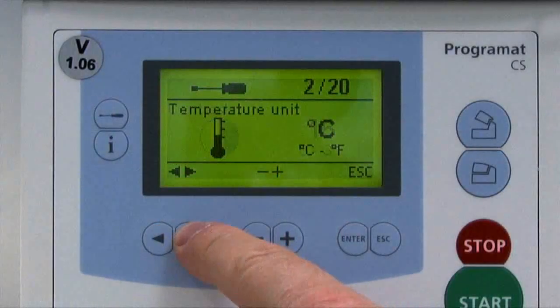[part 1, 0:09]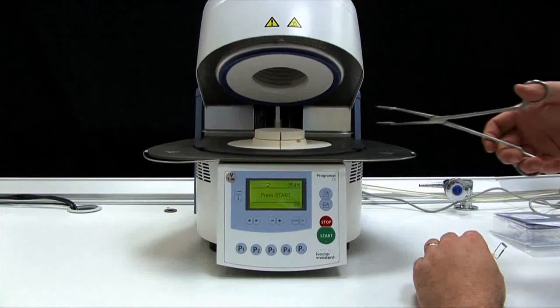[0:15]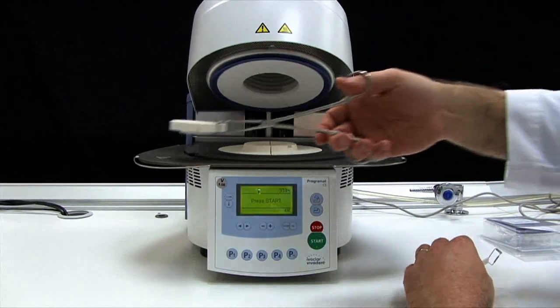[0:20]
To calibrate the Programat CS, begin by selecting the calibration program. Remove the firing plate from the furnace using the furnace tongs and place it on the cooling rack.
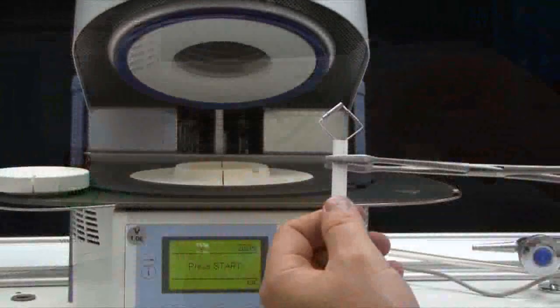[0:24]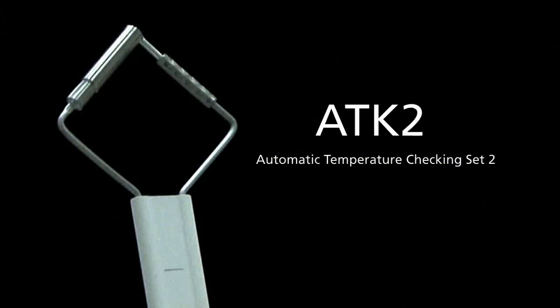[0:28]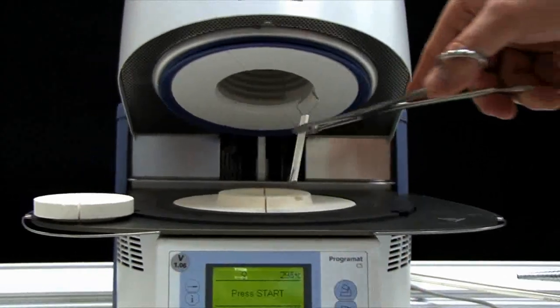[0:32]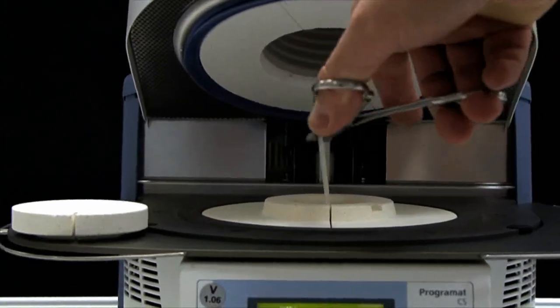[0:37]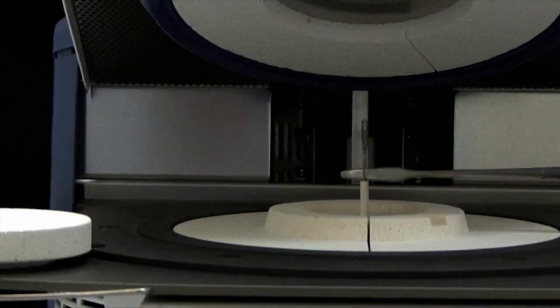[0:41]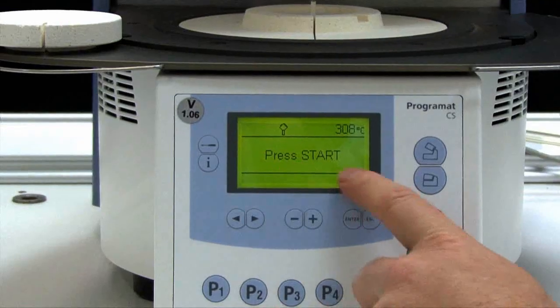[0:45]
Carefully grip the upper part of the automatic temperature checking set 2, otherwise known as the ATK2, with the furnace tongs and insert it into the hole until it snaps into place. If necessary, use the furnace tongs to apply slight pressure to the center of the ATK2 base until the sample clicks into place. Next, start the calibration program.
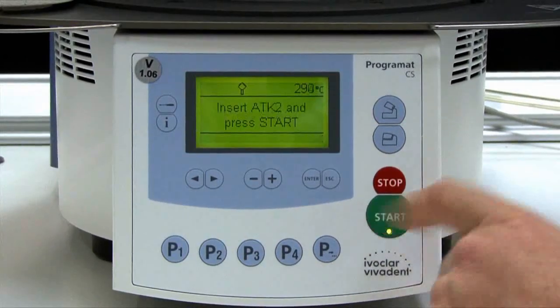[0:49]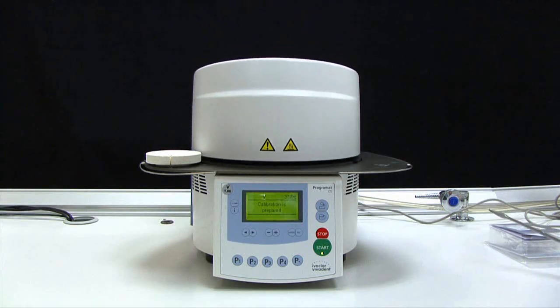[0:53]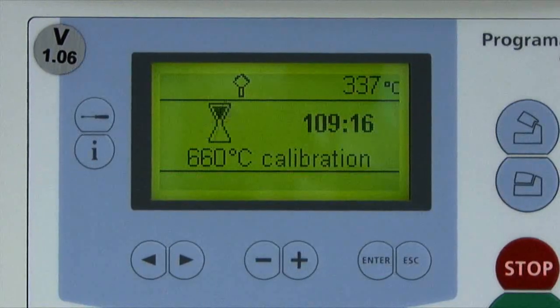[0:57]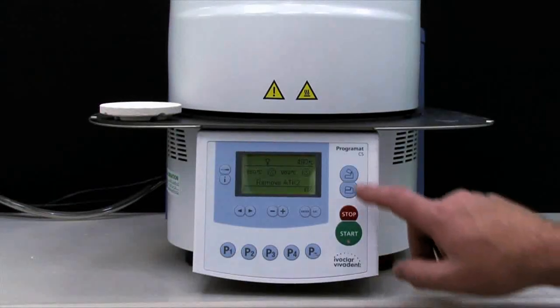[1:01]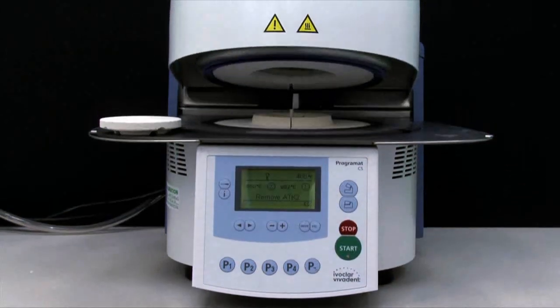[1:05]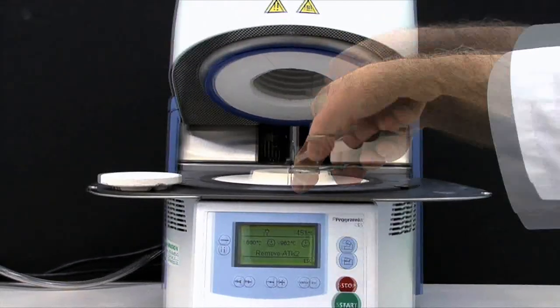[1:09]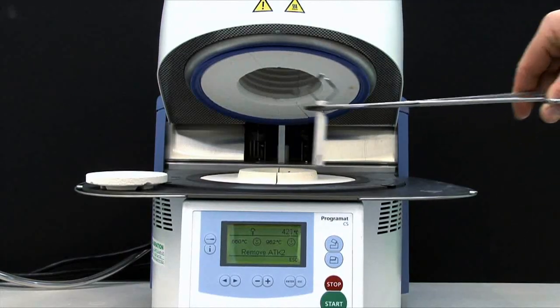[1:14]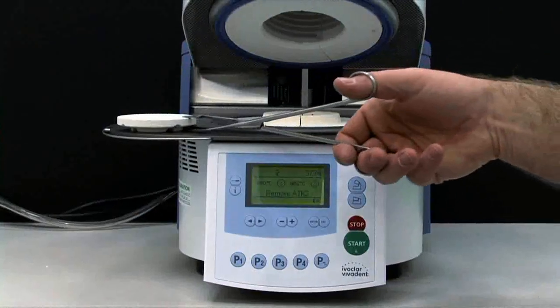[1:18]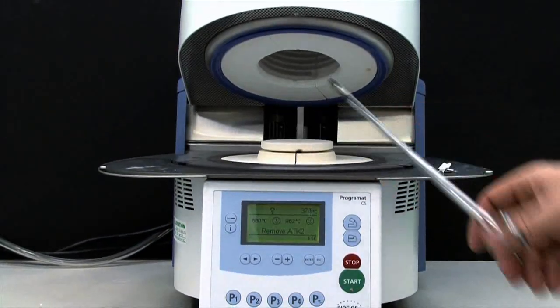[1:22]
At the end of the program, open the furnace head and remove the ATK2 with the furnace tongs and place it on the cooling tray to cool. Replace the firing plate and close the furnace head. Your Programat CS is now calibrated and ready for use.
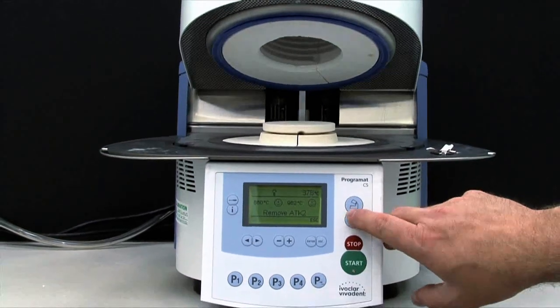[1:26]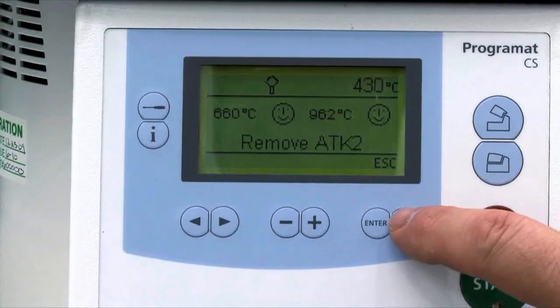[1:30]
Note the ATK2 can only be used once. Use a new ATK2 for the next calibration.
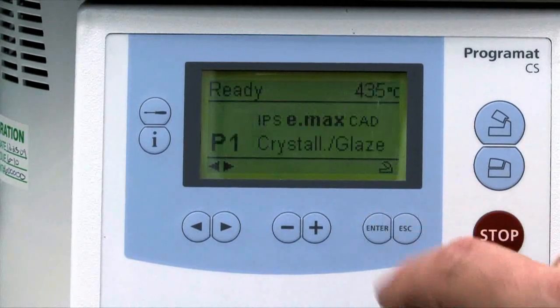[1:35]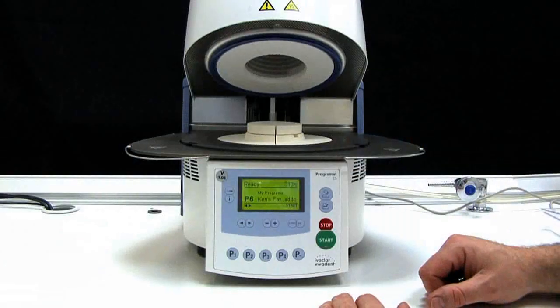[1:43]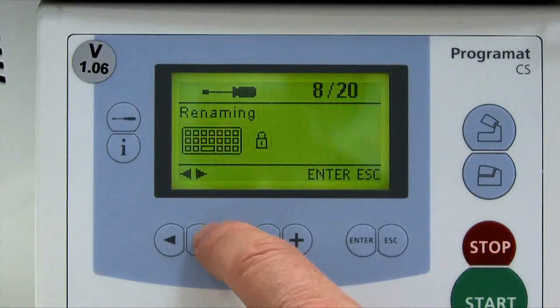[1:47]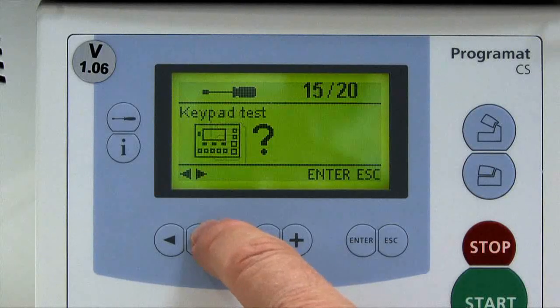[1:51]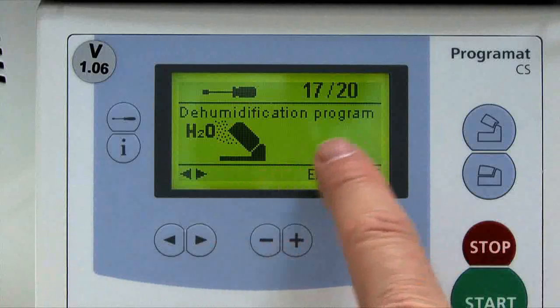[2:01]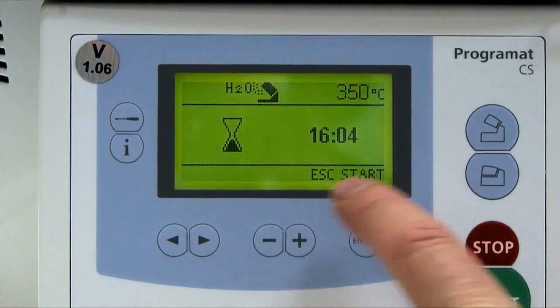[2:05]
In moist climates, the condensation of water in the insulation of the firing chamber and the vacuum pump will result in a lower vacuum and thus impaired firing results. In order to prevent the absorption of humidity, the furnace head should be kept closed when the furnace is switched off. To run the dehumidification program, select it from Settings and select Enter. The program runs approximately 90 minutes.
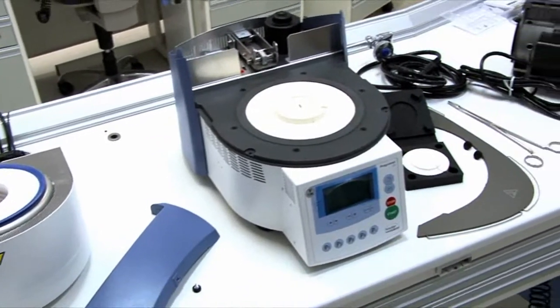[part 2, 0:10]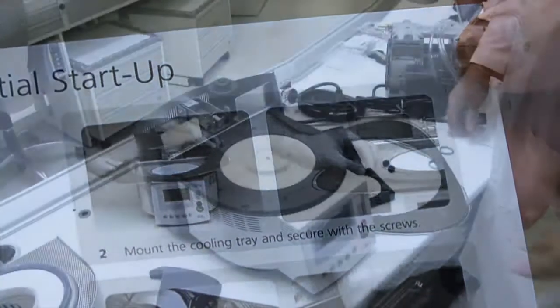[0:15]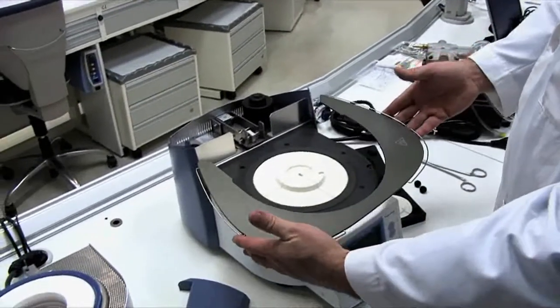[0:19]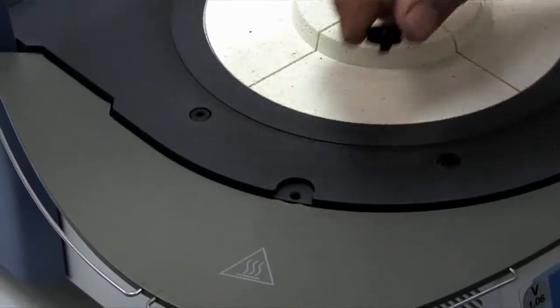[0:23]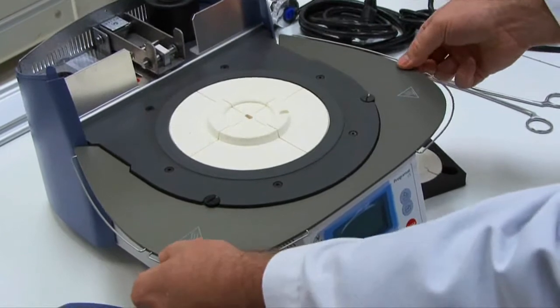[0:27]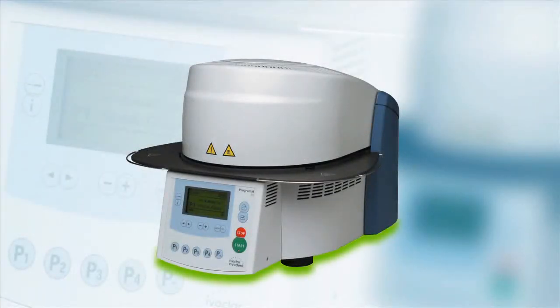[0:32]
Assembling the Programat CS is completed in 6 easy steps. Step 1. Attach the cooling tray to the furnace by correctly positioning it on the frame plate and securing it with the 2 screws provided. Note, do not use the cooling tray as a handle to transport the furnace, and always provide carrying support from the bottom.
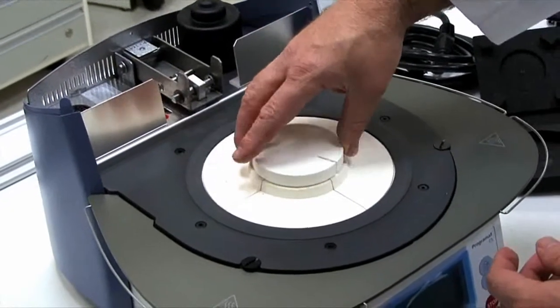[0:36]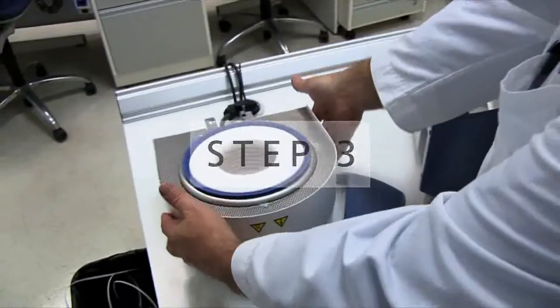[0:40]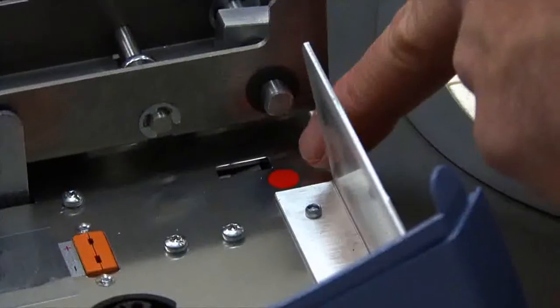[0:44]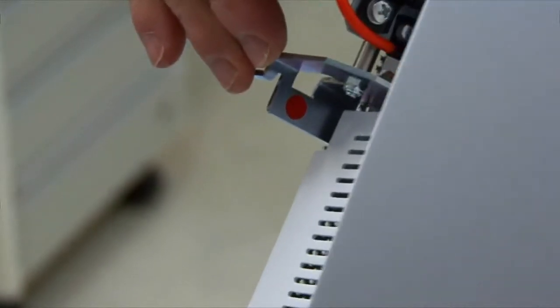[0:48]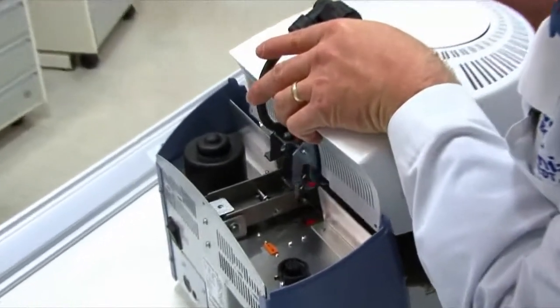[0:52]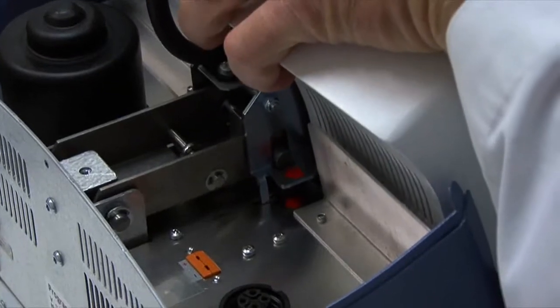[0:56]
Step 2. Place the firing plate on the firing plate holder. Step 3. Mounting the furnace head. Lift the furnace head with both hands and carefully position it on the furnace head mounting. Ensure that the red furnace head mounting mark is aligned with the red furnace base mounting mark. Additionally, use care to ensure the firing plate is not damaged during the mounting process.
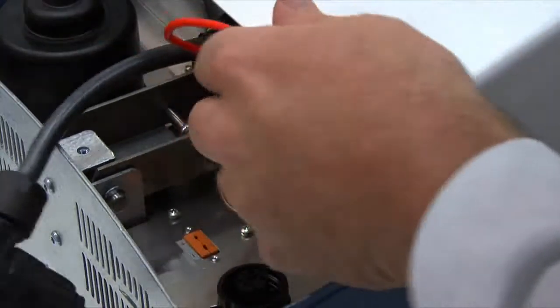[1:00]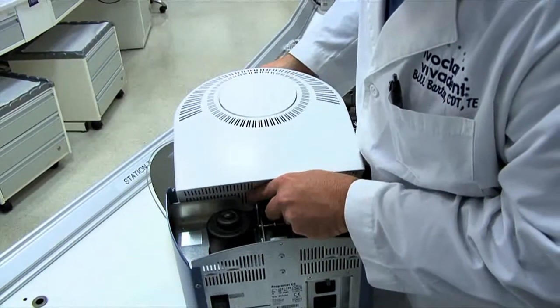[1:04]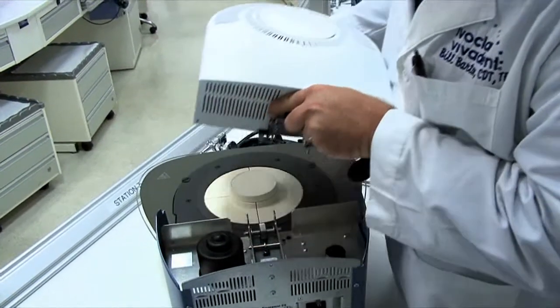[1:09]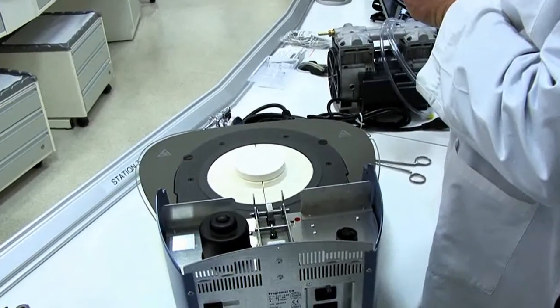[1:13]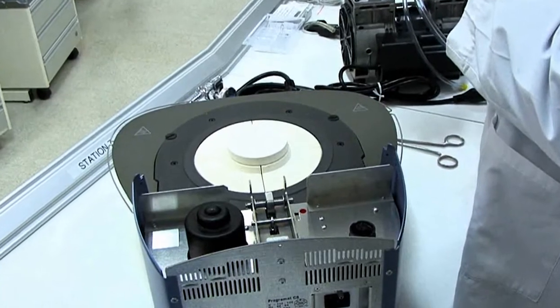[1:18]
If for any reason the CS requires dismantling and repacking for transportation, simply press the leaf spring on the left side of the head latch with a finger and lift off the head at the same time. Make sure the furnace head has completely cooled down before repacking.
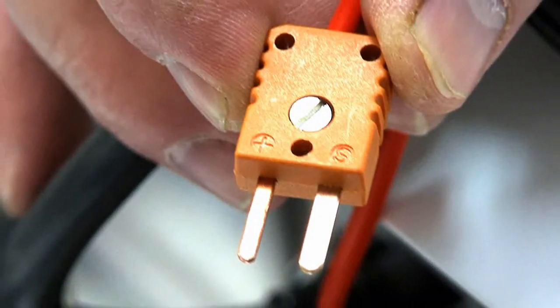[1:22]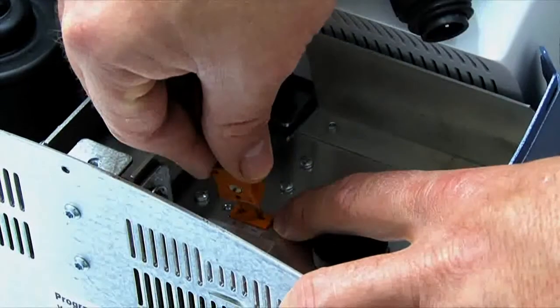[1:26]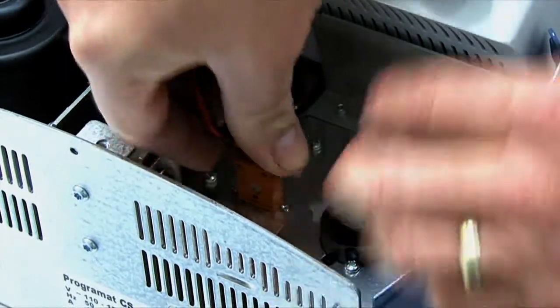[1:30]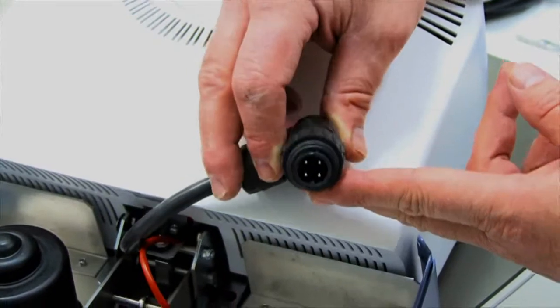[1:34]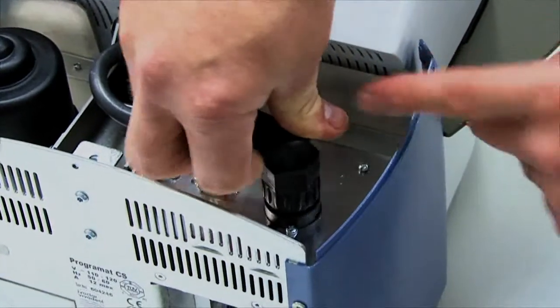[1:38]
Step 4. Connect the cables of the furnace head to the base. Insert the thermocouple plug, ensuring the polarity is correct. Positive in the positive hole and negative in the negative hole. Then insert the heater plug and secure it with the plug fuse by tightening the heater plug nut.
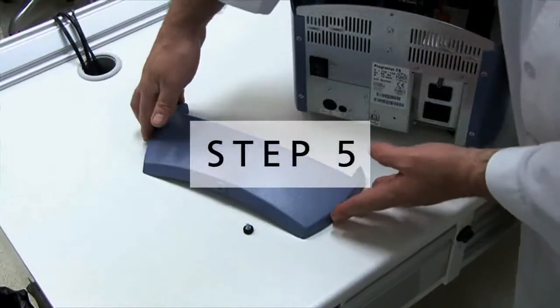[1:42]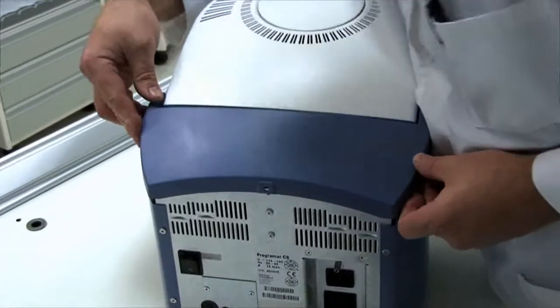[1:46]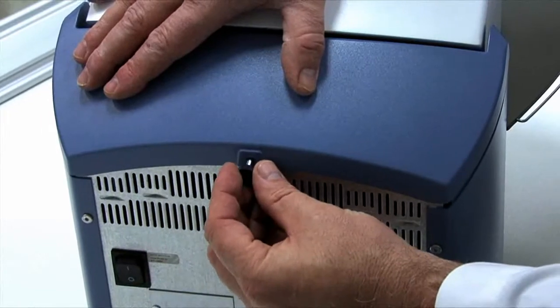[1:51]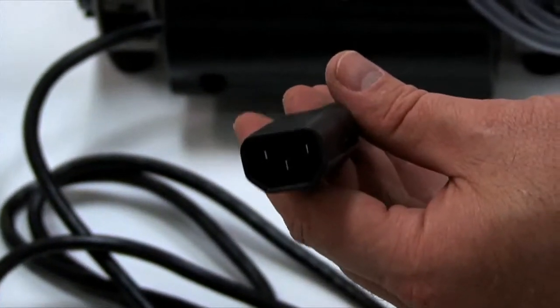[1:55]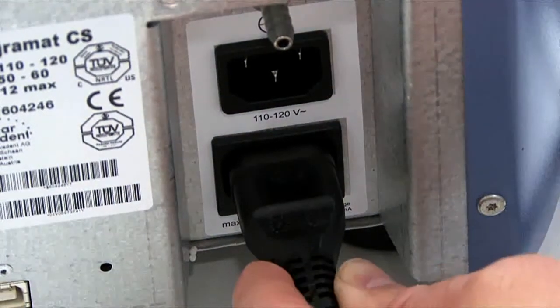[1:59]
Step 5. Once the cables are properly connected, the hood can be mounted. Secure the hood with the knurled screw. Step 6. Establish additional connections by connecting the power supply cord with the socket of the furnace and plugging into the wall outlet.
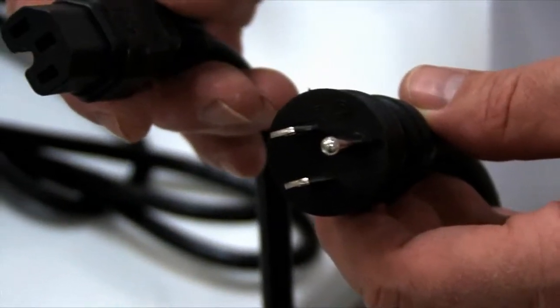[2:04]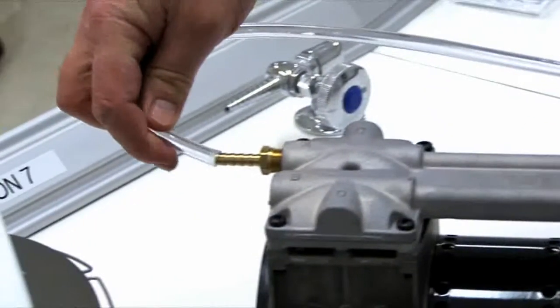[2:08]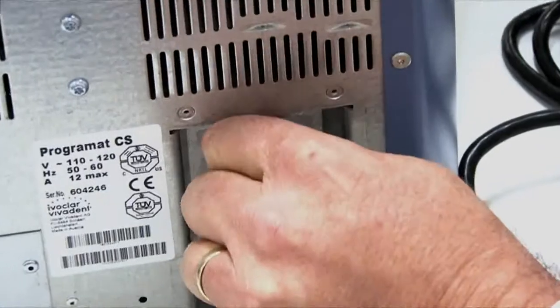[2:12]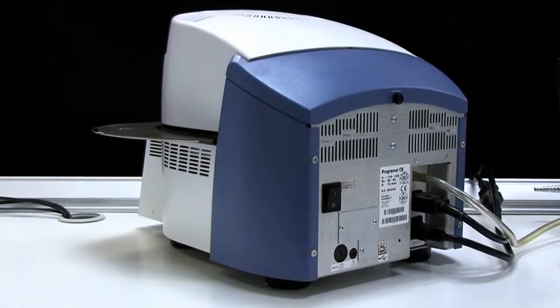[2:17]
Next, connect the vacuum pump plug with the vacuum pump socket on the furnace, and then connect the vacuum hose to both the pump and the furnace. The Programat CS is now ready for use.